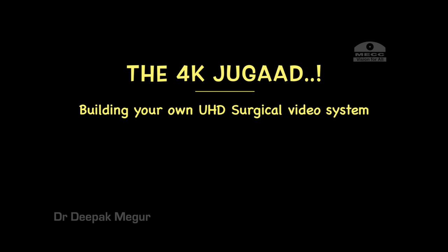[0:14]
Hi. Well, this has been the most commonly asked question for me. How do I record my surgical videos?
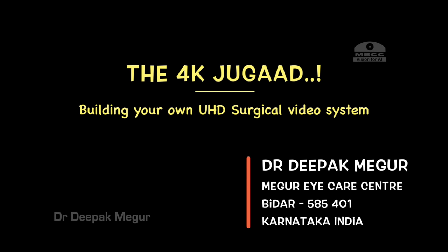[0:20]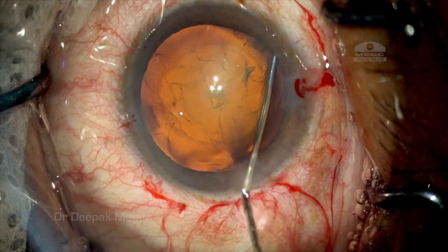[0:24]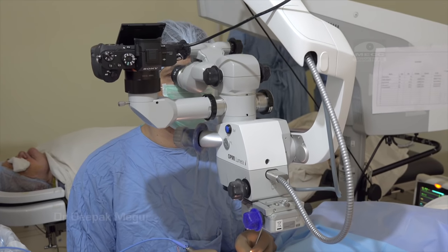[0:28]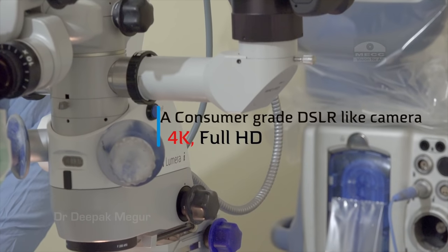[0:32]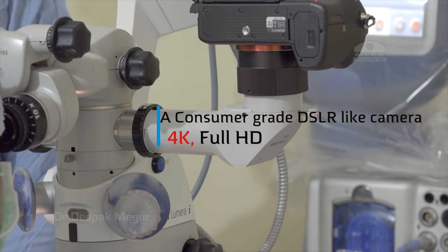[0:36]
I don't have any financial interest in any of the products which are going to be presented in this video. Today I'll be sharing on how to get the finest image quality in your surgical videos by using a DSLR-like camera which also records in 4K and full HD.
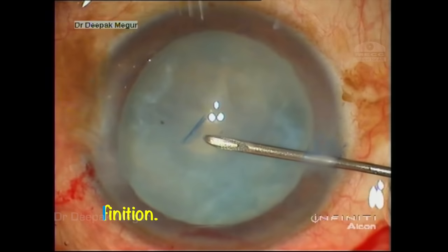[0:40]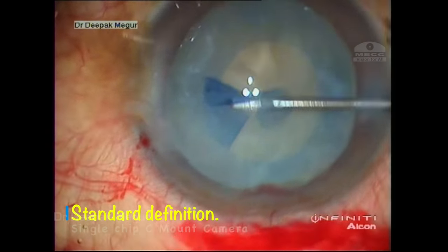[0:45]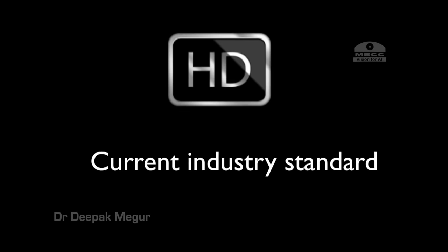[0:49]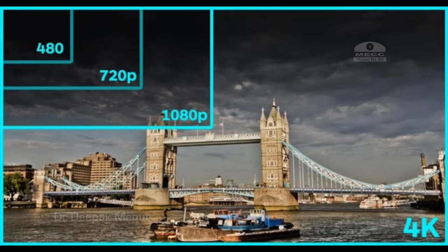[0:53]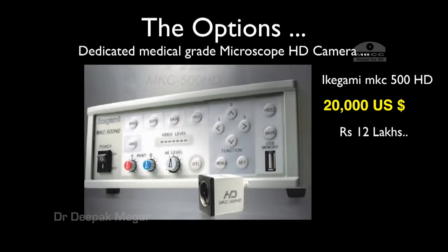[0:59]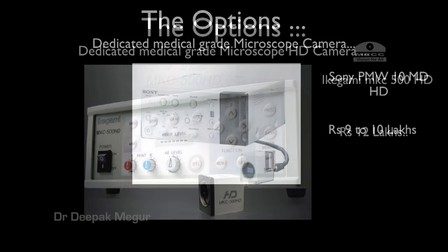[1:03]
It all started in 2014 when I decided to upgrade my surgical video camera from a standard definition C-mount camera to a high definition camera. And I was probably considering upgrading to a 4K as well, because definitely the resolution bandwidth we have is significantly higher. A little bit of research showed me two options, Ikegami 500 and the Sony.
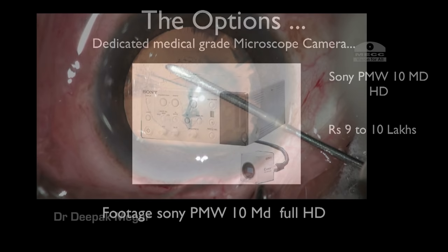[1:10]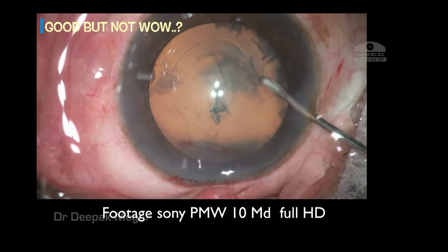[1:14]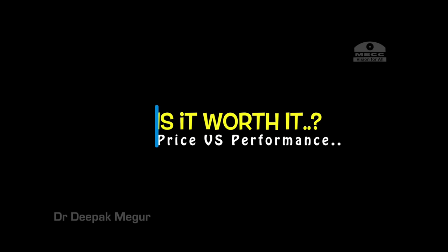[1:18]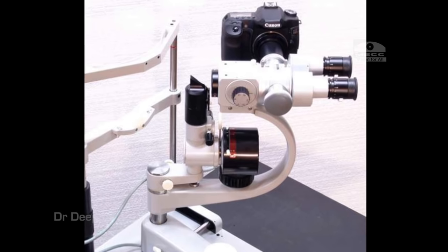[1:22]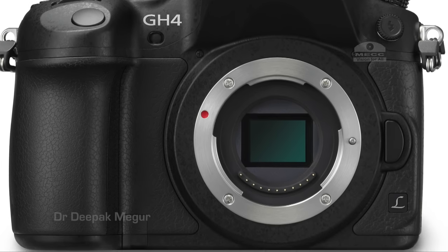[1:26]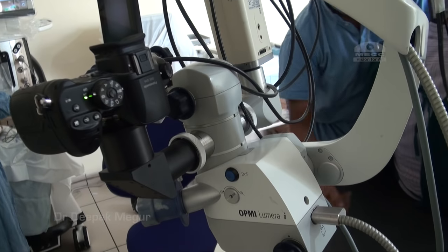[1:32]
Both were pretty expensive. They were three chip full HD cameras, and I had a demo of the Sony unit. It was good, but it was not overwhelming, and definitely I did not find it to be worthy of the price. I continued my quest and was considering recording using a DSLR because I was using it for my slit lamp photography. I went ahead and bought a Panasonic GH4 camera which was recording in 4K and full HD, and
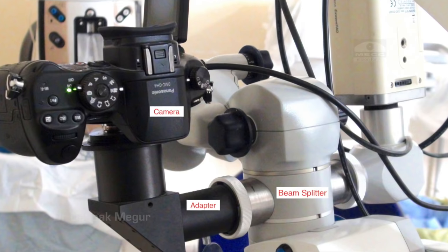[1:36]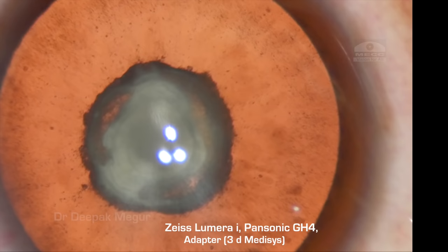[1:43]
I got an adapter made locally by 3D Medisys, and then I began to use the system by attaching it to my Lumera eye microscope. The image quality was decent enough.
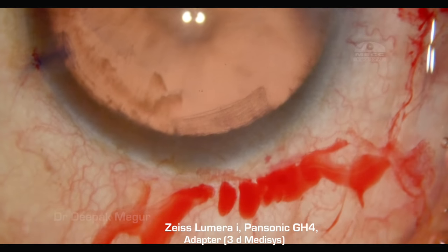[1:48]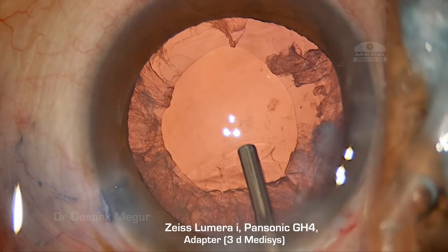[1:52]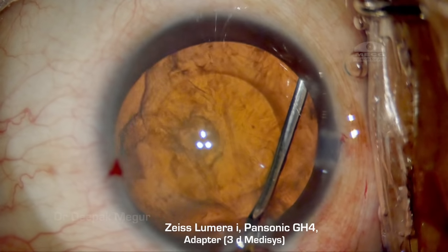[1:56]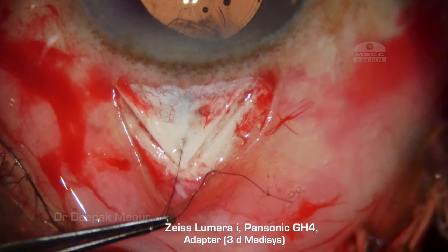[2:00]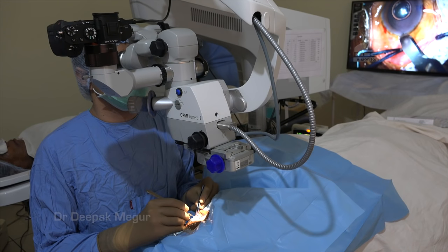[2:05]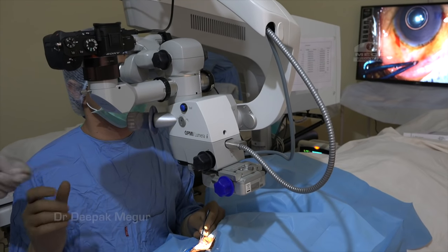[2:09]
It was definitely better than what I was getting before, but there are some issues with this system because this camera was not so good in slightly lower illumination levels. So my quest was continuing to get an adapter for a better camera. Thankfully by 2016 August things fell into place and I could get a decent adapter for a better camera.
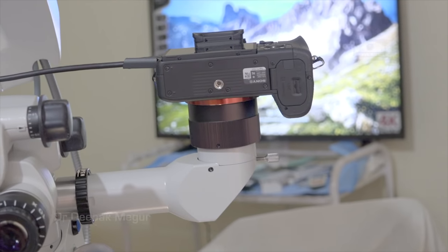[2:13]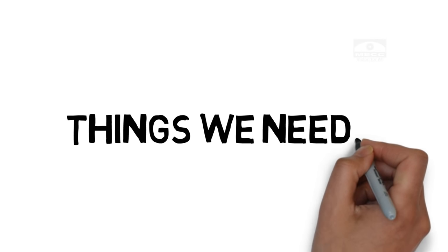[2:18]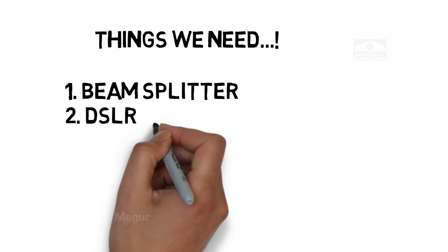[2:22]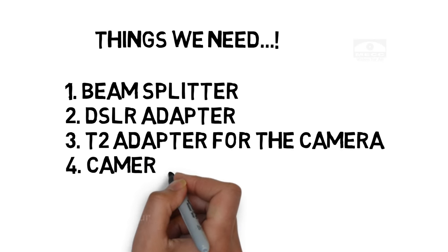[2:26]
For starters, let us go back and look at the things which we require for setting up the system. Apart from the microscope, we require a beam splitter, a DSLR adapter, a T2 adapter for the camera, and finally the camera itself.
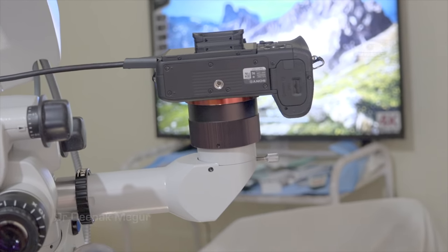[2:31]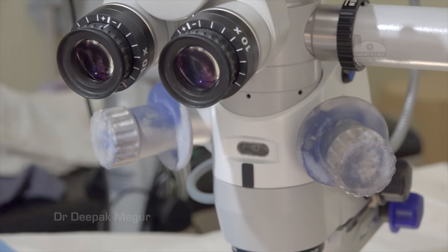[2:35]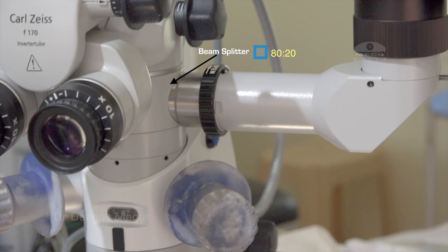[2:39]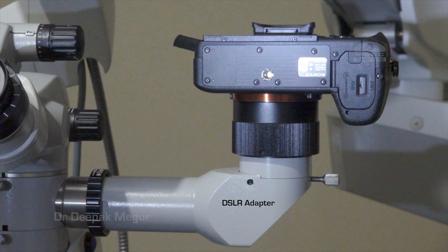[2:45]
We all should know that the beam splitter comes in various permutations, 50:50 or 80:20. Mine is 80:20. That is, 80% of the light goes to the surgeon and 20% of the light goes to the side tubes.
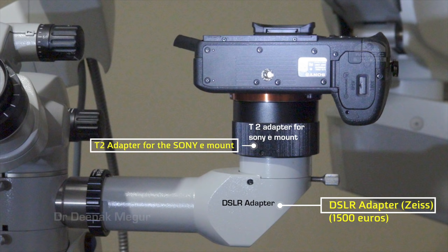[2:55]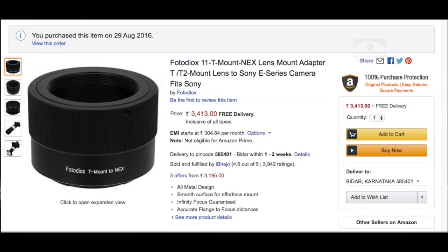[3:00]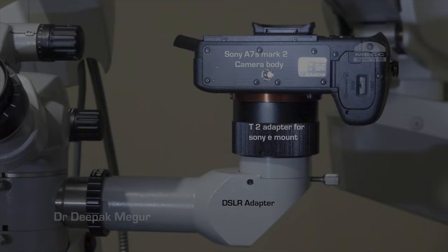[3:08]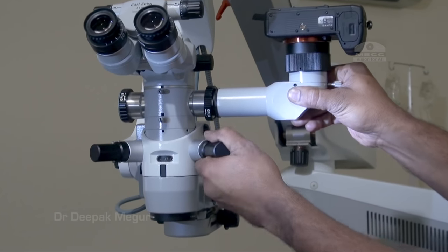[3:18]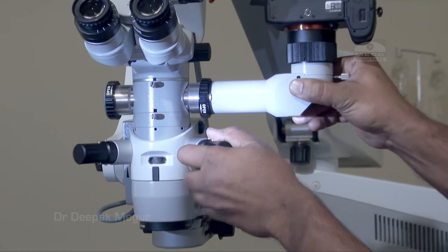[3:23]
This is a DSLR adapter which I got from Zeiss, and in between the DSLR adapter and the camera, we need to have another accessory called the T2 adapter for the Sony E-mount, which I googled and found at Amazon India and bought. And finally the camera itself. So this is how the entire system looks like. This is how it's going to be fixed into the beam splitter.
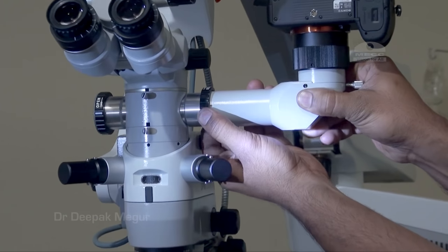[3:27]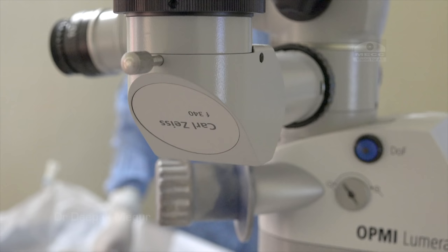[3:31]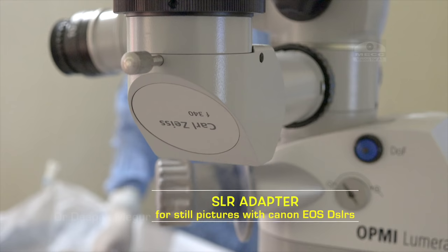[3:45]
Well, the struggle for me has been really to find the right adapter for this, which is the most important component I feel. Zeiss has it but never markets it. Many of its executives are not even aware of its existence. Traditionally, it has always been thought that it has to be given only for taking still photographs with the Canon
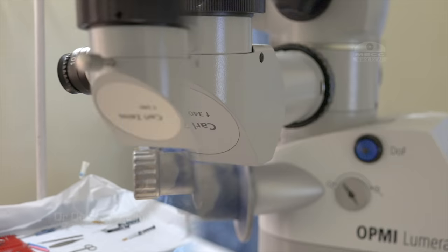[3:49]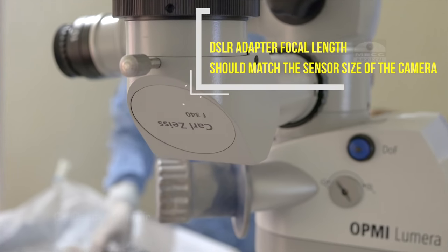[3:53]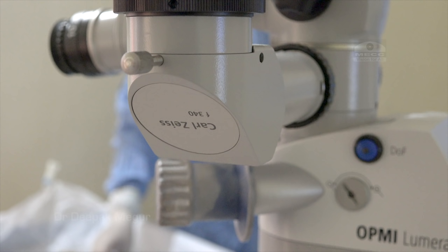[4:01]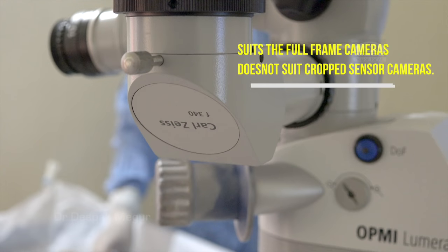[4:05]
EOS DSLRs. But the basic point here is that the focal length of the glass which is there inside this adapter, that is 340mm, has to match the sensor size of the camera. And by trial and error, I found out that this focal length matches the full frame sized cameras and not the APS-C cameras, because the image gets significantly cropped. So if you have a full frame camera, it fits into this pretty well.
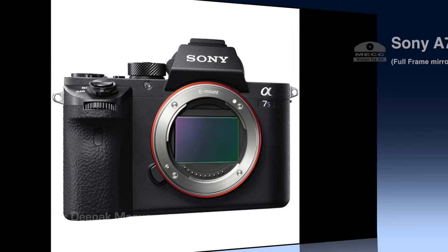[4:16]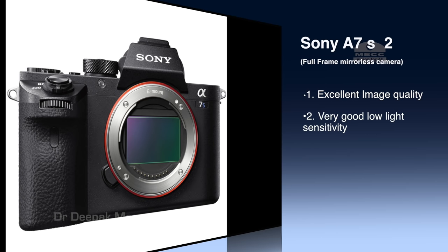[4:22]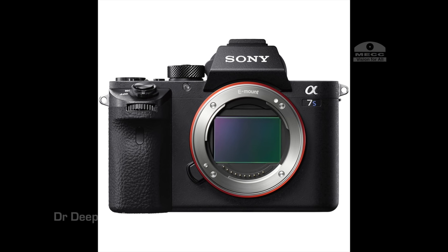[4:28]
Then we need to get hold of the camera itself, and the Sony a7S II is a full frame mirrorless DSLR-like camera which records 4K internally. The highlight about this is it has got an excellent low light performance apart from giving a clean HDMI out.
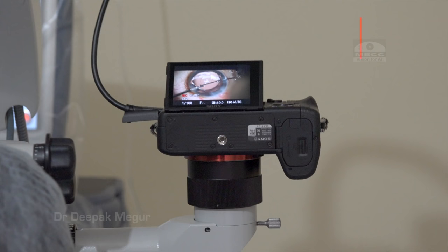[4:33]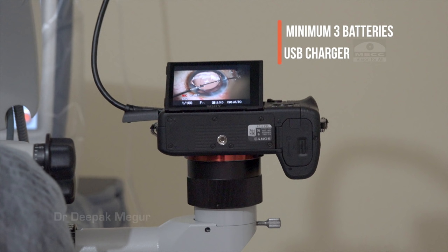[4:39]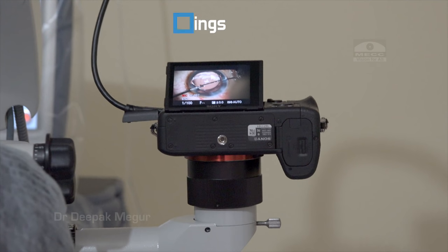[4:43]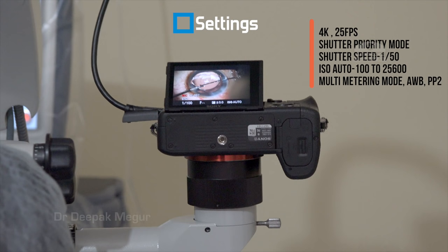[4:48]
This camera comes with certain irritants, like an extremely poor battery life and a very flimsy micro HDMI port. We need to work around it by using a USB charger or a continuous power supply and multiple batteries. These are the camera settings which I have found to be quite satisfactory for recording the video.
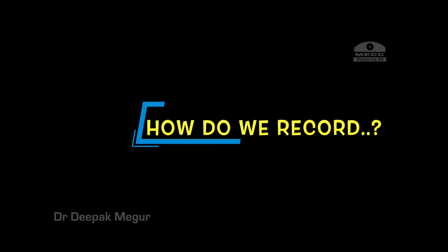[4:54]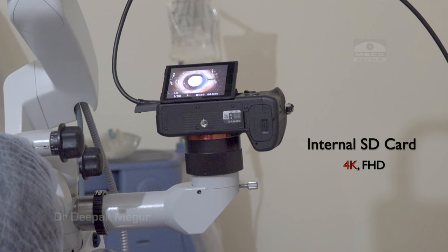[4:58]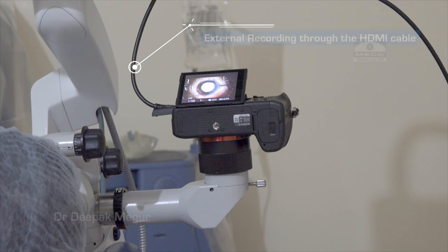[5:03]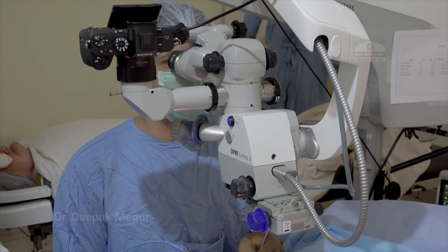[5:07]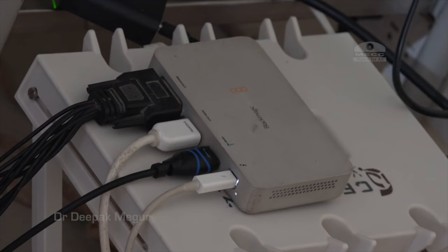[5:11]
Now, how do we record? The advantage of these DSLRs is that we can also record internally using inexpensive SD cards. We can record 4K or full HD internally in a compressed format, or record externally using an HDMI cable. So I usually record both in camera and also externally.
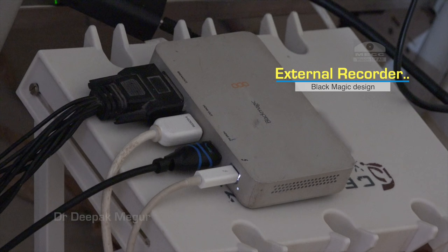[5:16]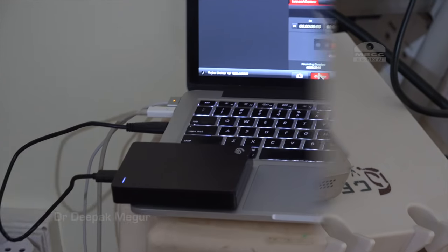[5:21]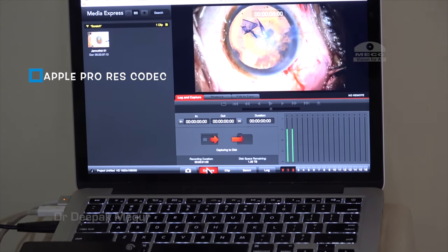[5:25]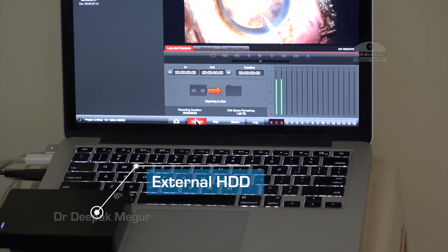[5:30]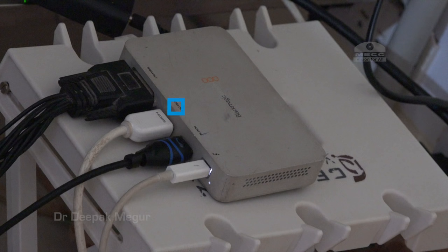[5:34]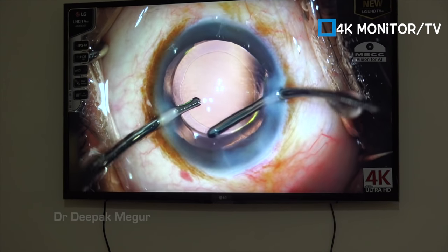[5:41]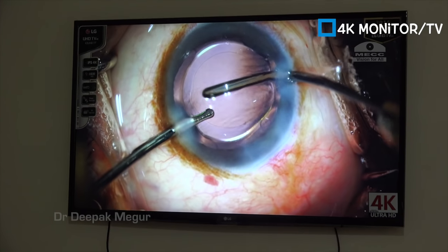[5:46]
This is an external recorder, a small device designed by a company called Blackmagic. This device is connected to my laptop and I'll be using a better codec to record, and all the footage is stored in an external hard drive. This system helps me to archive the patient's data in a much better way. We can store individual videos by the patient's names. And finally, the HDMI cable goes out from the HDMI port of the device and connects to my 4K monitor, which is hung at the wall.
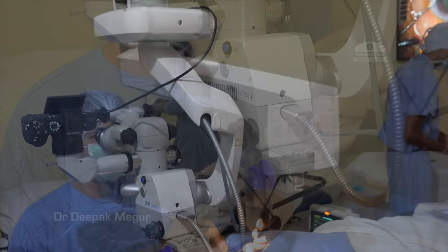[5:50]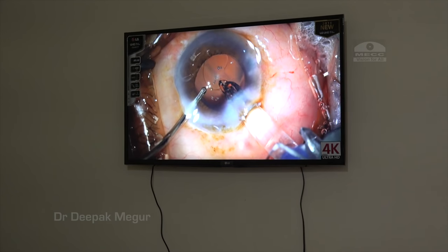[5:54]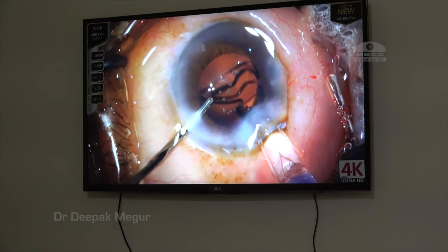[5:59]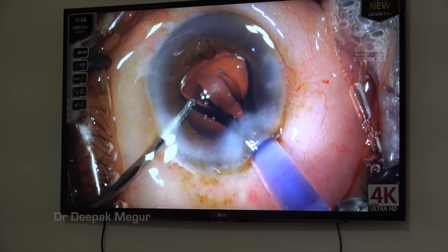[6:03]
Typically in our operation theater, the display monitor is hung at the foot end of the operation table. The idea is that the assistants can guide the surgeon and let him or her know whether the focus and the centering is right or not.
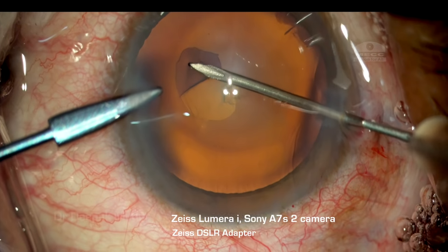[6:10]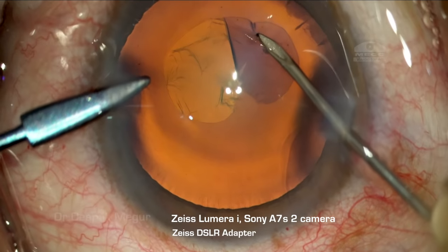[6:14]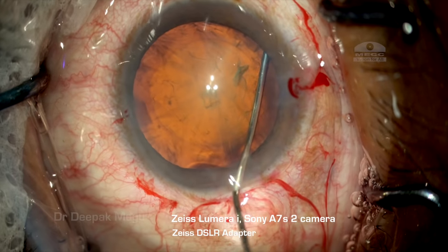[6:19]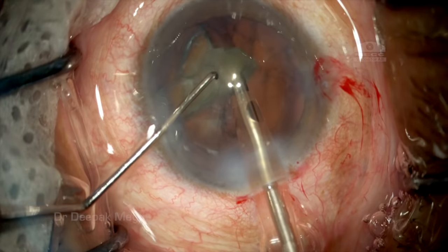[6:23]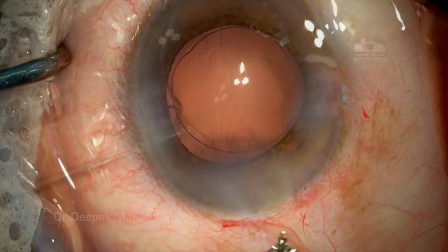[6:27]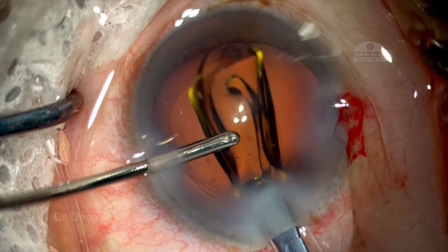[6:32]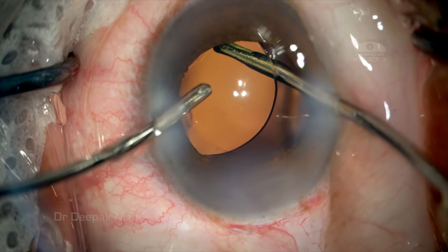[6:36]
Having done all the hard work, now let's look at how the video really looks. Well, you can all have your own independent judgment and assess the quality of the video. In my personal opinion, we have been using many systems, and among the systems which we have used in our experience, we have found that this is the sharpest video quality which we have been able to achieve when we compare it to the previous versions which we have.
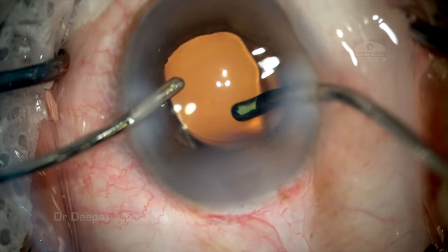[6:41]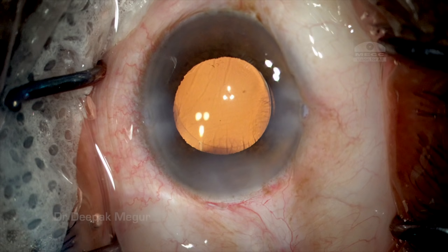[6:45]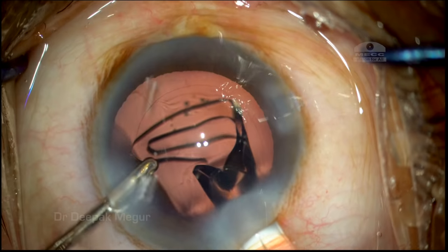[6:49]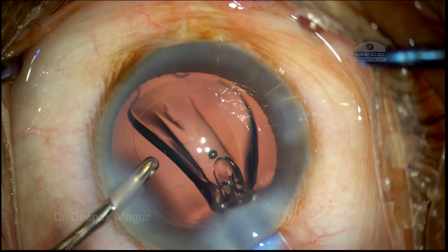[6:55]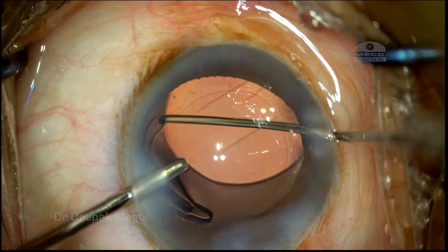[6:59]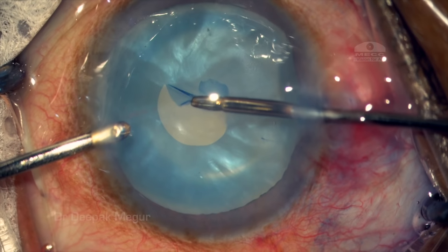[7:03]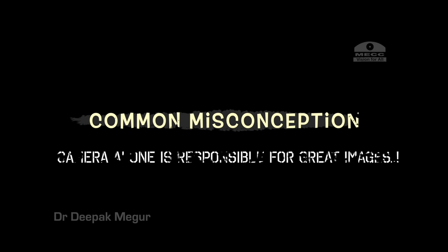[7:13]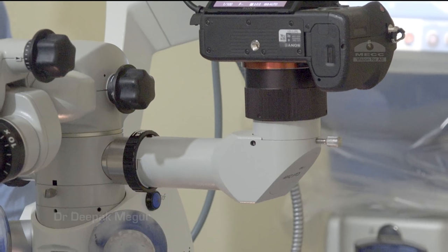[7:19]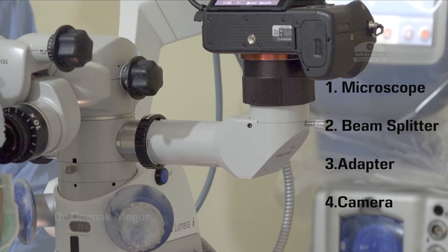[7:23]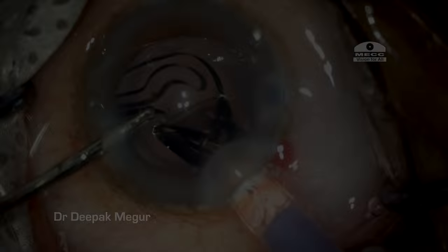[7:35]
What ensures a great image quality? Let me clarify certain common misconceptions, the most common being that the camera alone is responsible for great images. Well, there are multiple elements involved here, starting from a good microscope to the beam splitter, adapter and finally the camera. There are glass elements present in the beam splitter and the adapter, and the quality of the glass ultimately decides the sharpness of the image which is going to be formed on the camera.
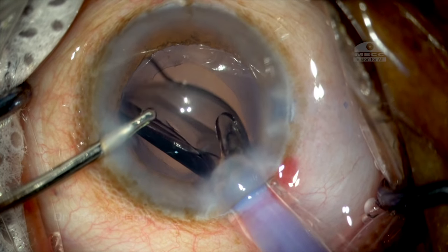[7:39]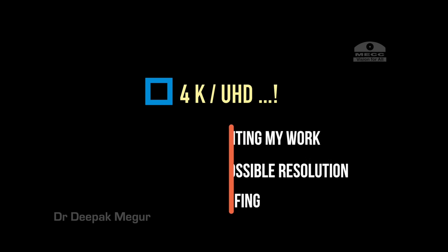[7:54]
Just like the human eye, all the optical elements have to be fine to have a great image on the retina. And finally, coming to the worthy debate of 4K, do we really need it? Especially as the majority of conferences in India and abroad don't even provide full HD projectors. Well, the argument against it would be that my point of view is that I am documenting my work and I would want to document in the highest possible resolution which is currently available. It's a form of future-proofing our work.
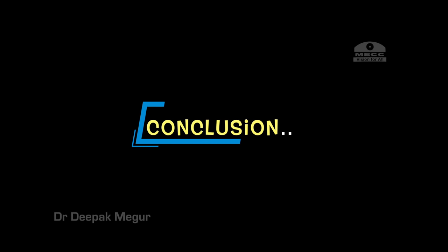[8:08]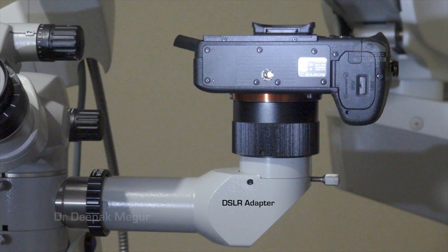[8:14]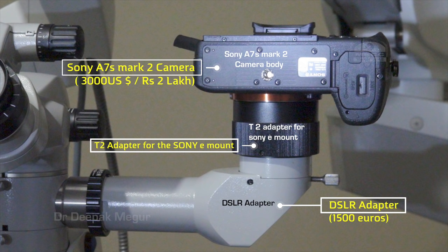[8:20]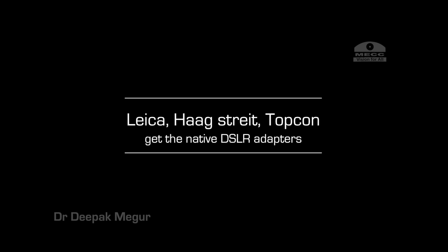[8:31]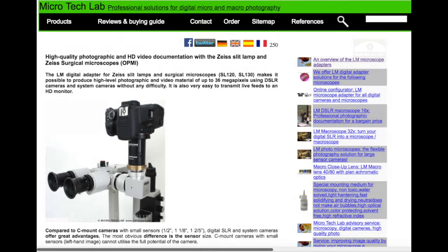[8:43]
Finally, to conclude, although we have very good options in the C-mount cameras, the traditional cameras, modern day DSLRs give us a great opportunity to record in the highest possible resolution in a much more economical way. And for the Zeiss users, you already have an existing SLR adapter available in the portfolio. I would advise them to go for that instead of the C-mount lens. Similar advice for surgeons using other brands: ask for native DSLR adapters, since they may have better glass elements. If you don't find them, then there are many third-party vendors in India, and you can Google and find them across the world.